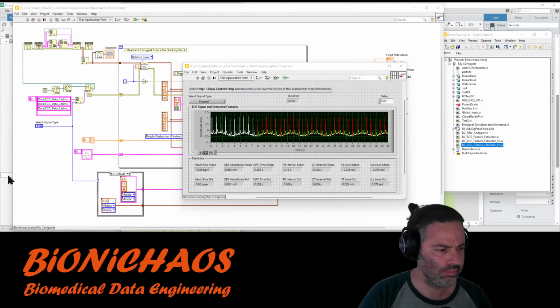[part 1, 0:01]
Dealing with ECG mostly at the moment. It's a bit unusual because I'm normally doing mostly EEG stuff.
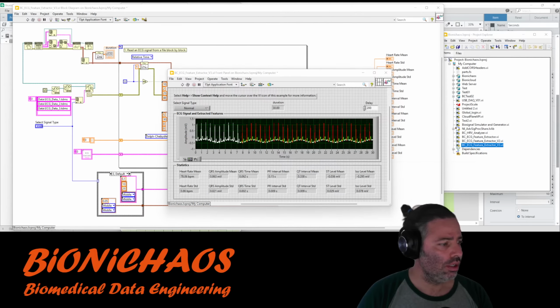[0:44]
Sorry, just distracted by social media stuff. Did it today, so this is what the next tool will look like. I think this will be a short one, just an update of what's coming next on Biomedical.
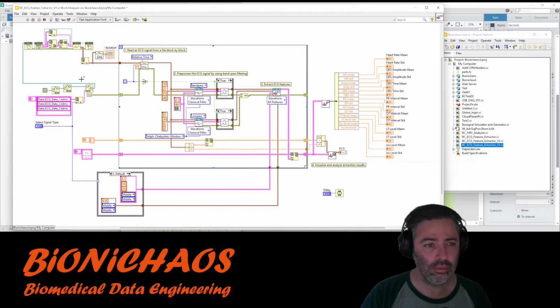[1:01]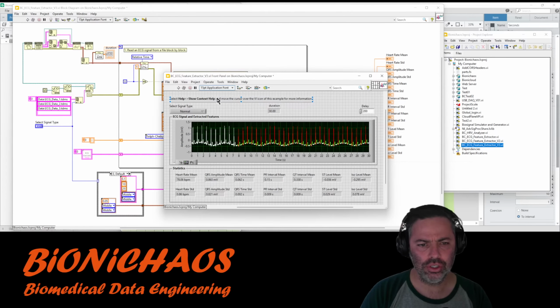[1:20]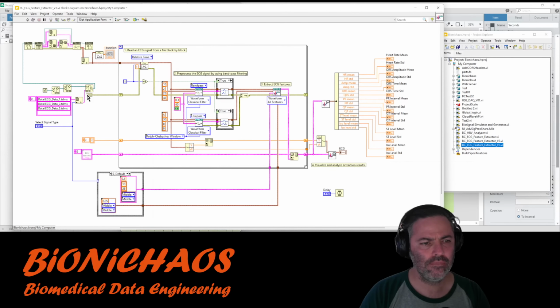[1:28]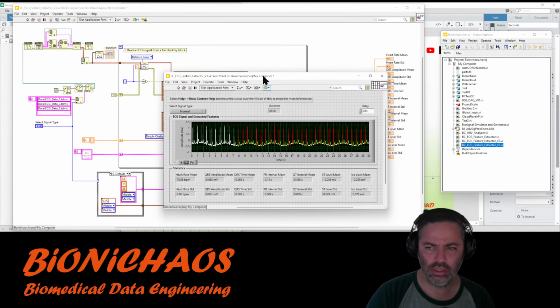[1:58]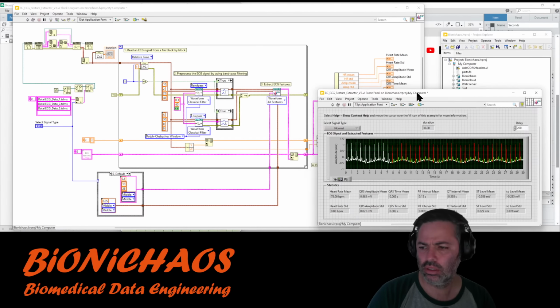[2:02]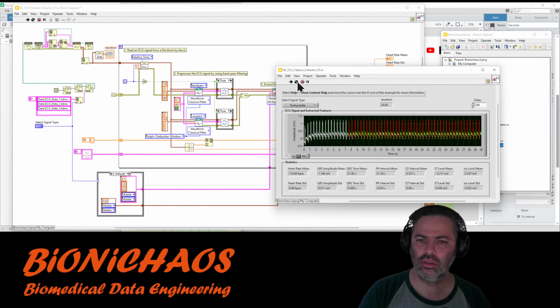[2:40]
To change that, I still need to figure out a few things. I removed the while loop from it because we don't need it. Why is it appearing there? Some sort of buggy thing.
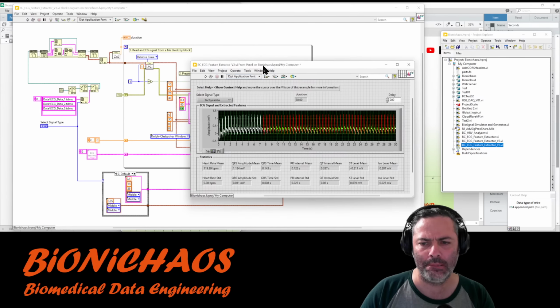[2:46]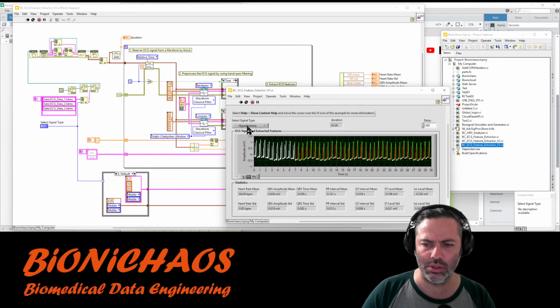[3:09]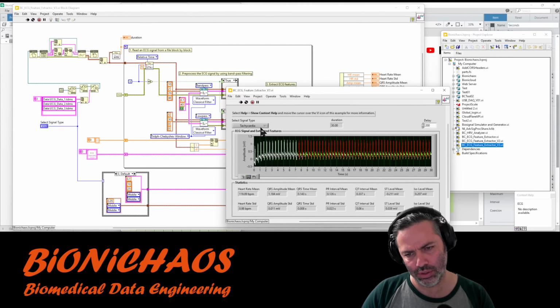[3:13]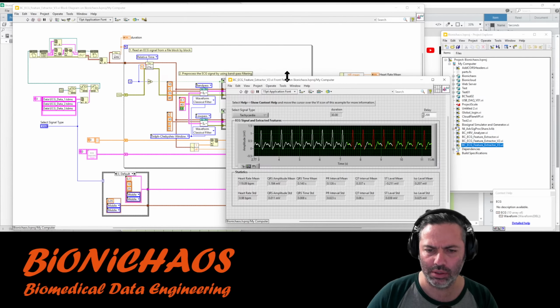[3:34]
Still on this tool, that's what's coming up on the site. It's taking ECG, different types of ECG, and labeling the different components. And yes, it is generating 3 waveforms for each one of those colors. I wonder how to be able to test it properly.
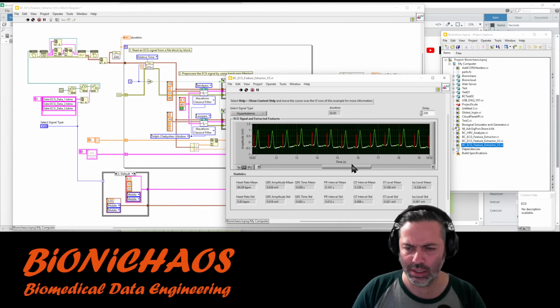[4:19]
This is the backend. Eventually, I have to turn it into an API. So I wonder if it's making any mistakes. Check the normal one. Not sure why it's marking the T and P wave in the same color. Could have marked them in different colors. They seem to be pretty accurate.
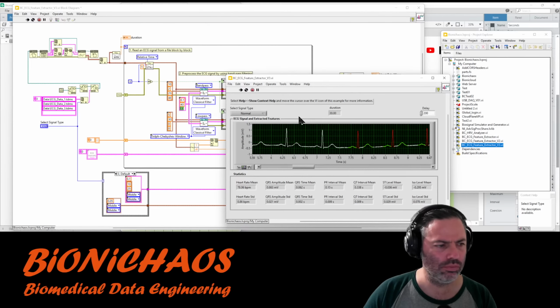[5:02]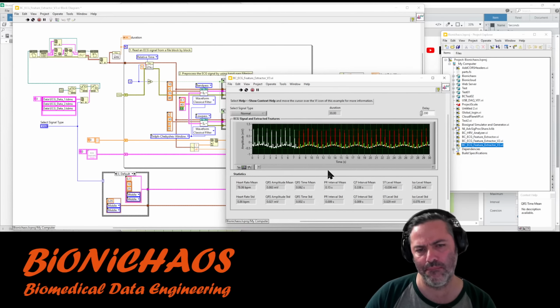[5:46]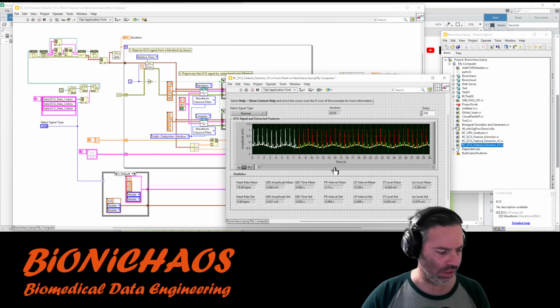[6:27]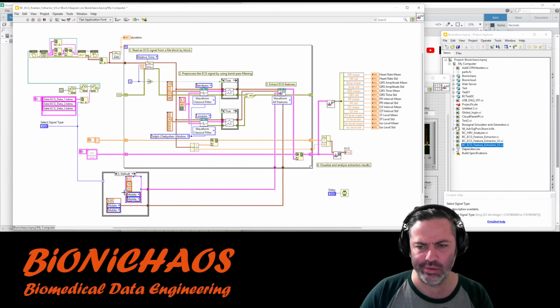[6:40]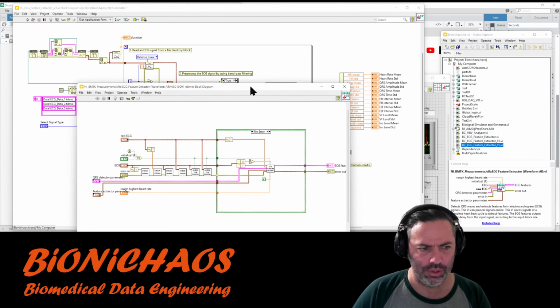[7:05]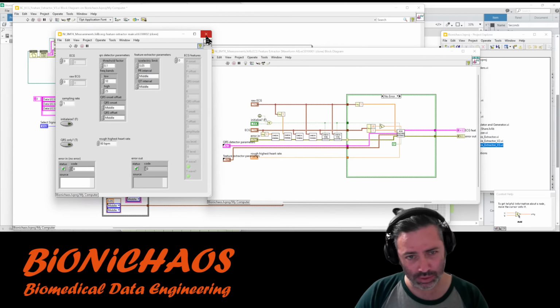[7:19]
Turn it into an API straight away. Just a few weird things about it. Forgot what it was. And the main thing, yeah, eventually it would be good to do it in Python or something, because again, the main function in here is password protected, so I have to get rid of it. I was able to get rid of another function, but this one will be harder to get rid of because it's the main.
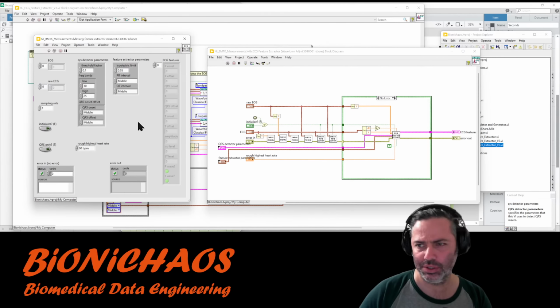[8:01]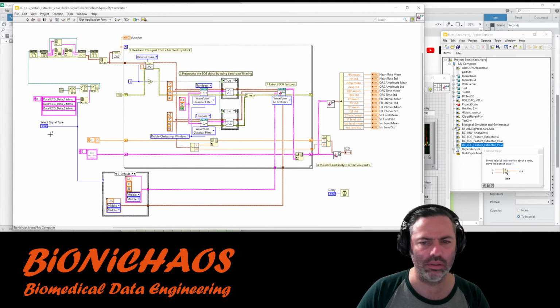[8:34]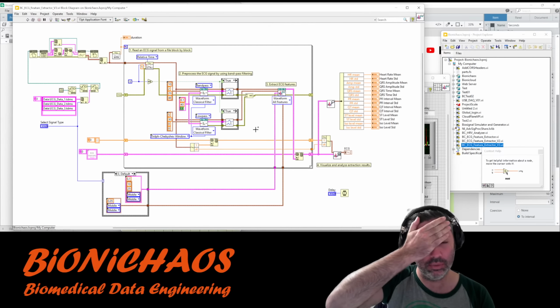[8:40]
I don't know what it is doing exactly. I just have the front panel. The source code is behind the password. There's no documentation on it as well. I don't want to edit this for now. Just leave it as is. It's just an example. Eventually, ideally, we'll have something similar in another language, ideally in Python or R.
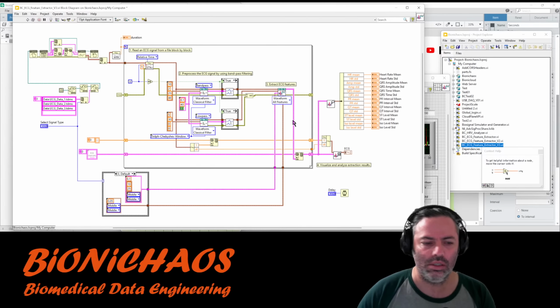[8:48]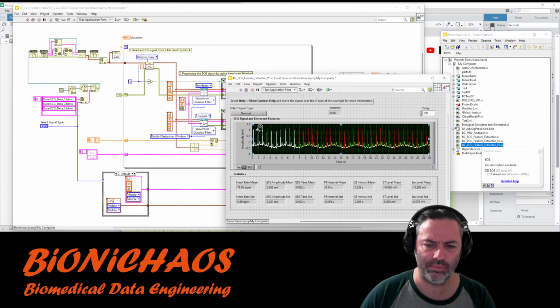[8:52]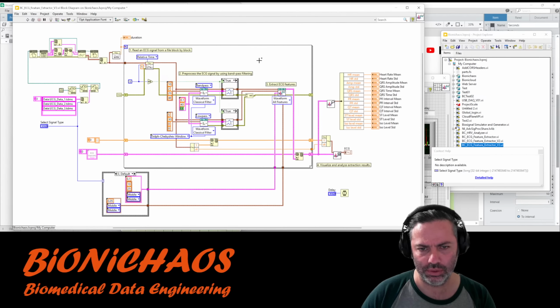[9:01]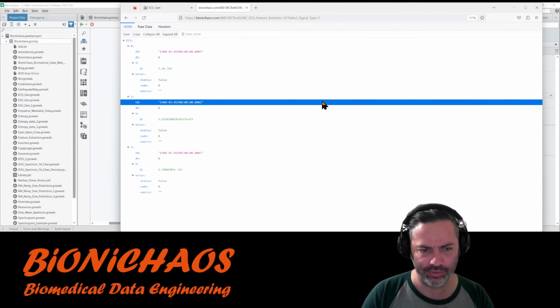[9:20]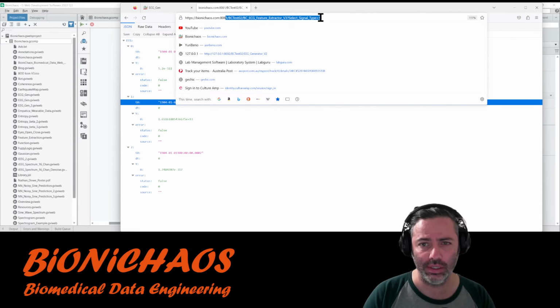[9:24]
So just turn this one into an API quickly. Then we have one input and a bunch of outputs. Cluster. Can you pass a cluster in an API? This is the bit I was fighting with for quite some time. But yeah, now it's working. So you can access the API from here.
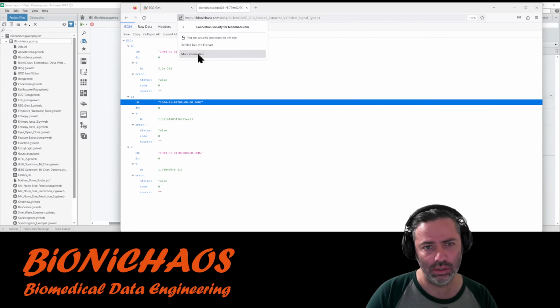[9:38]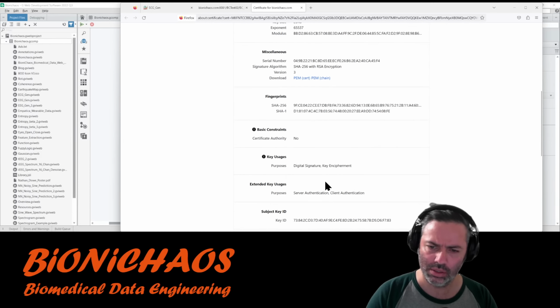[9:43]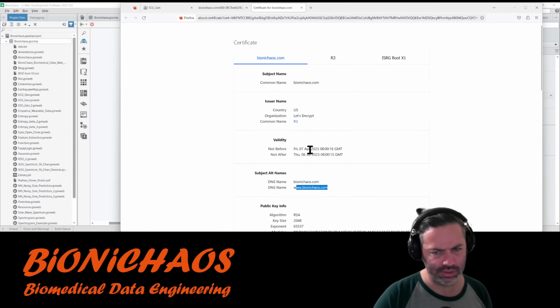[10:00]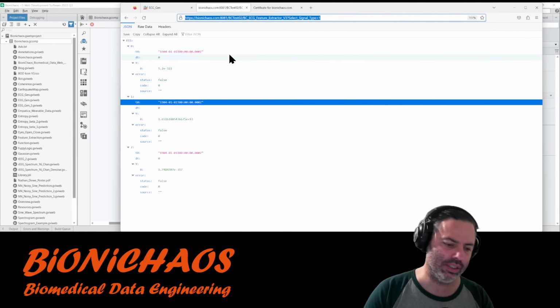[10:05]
If you do it from the same domain name, then the certificate works. You can view the public certificate, and it's verifying that this domain is this domain. And it's encrypting. It's also what allows encrypting any communication between your browser and the server.
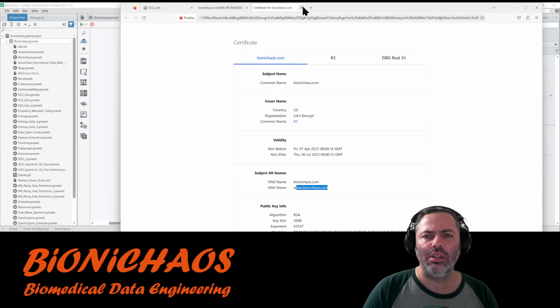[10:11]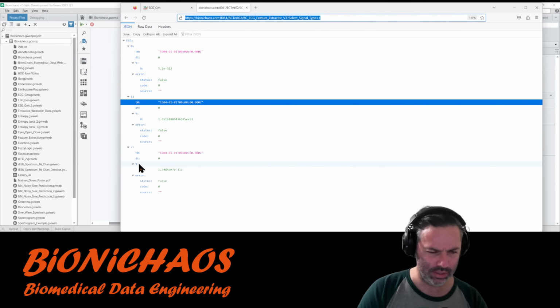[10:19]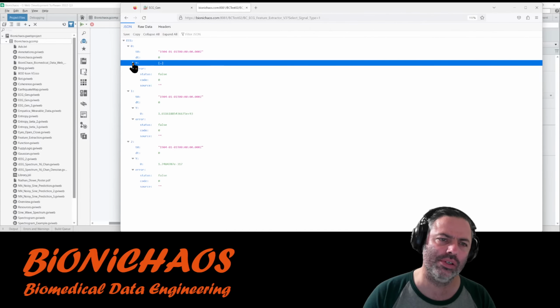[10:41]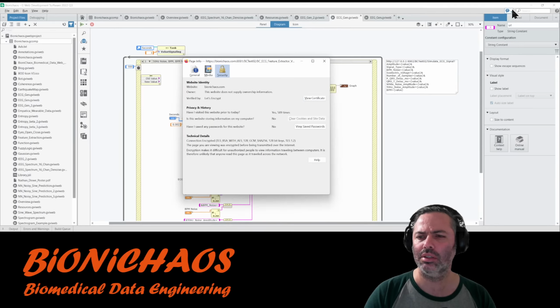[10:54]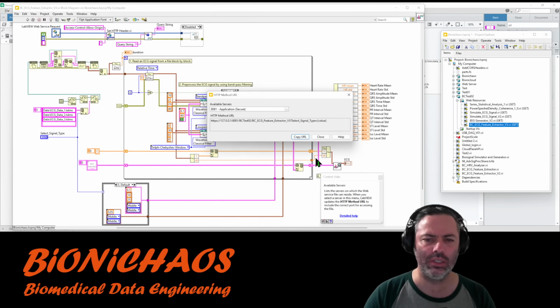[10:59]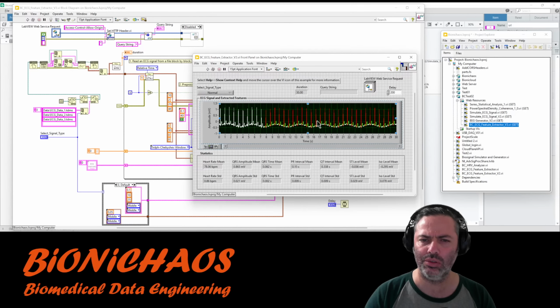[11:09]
So this one works, but probably don't need all this. It has these three waveforms, one for each color: the white, red, and green. We don't need... Wait. Still only have one value in it, so look right. Working, yes.
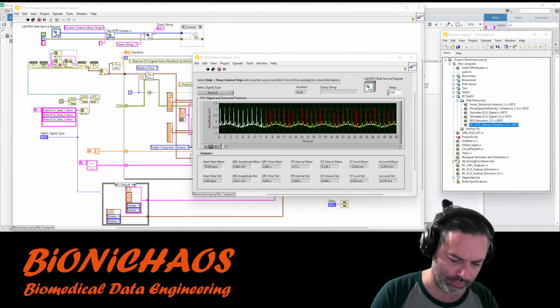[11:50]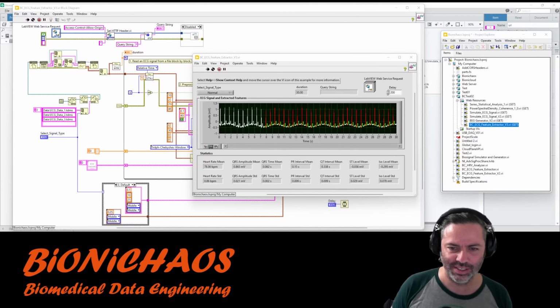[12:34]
So apparently, is it just Labview or National Instruments entirely that was bought by someone? Emerson. I heard of Emerson, but yeah, there's a big press release and everything. I don't know if it was a surprise, hopefully for the employees it was not. Press release. That's not a lot. It's 165 million. For all these numbers, it says 8.2 billion.
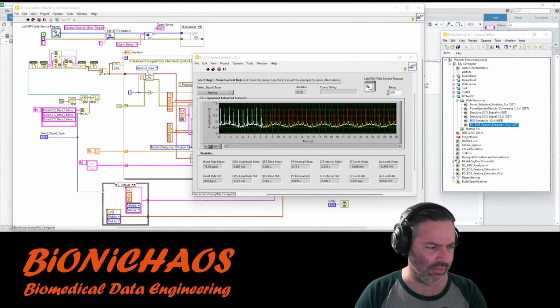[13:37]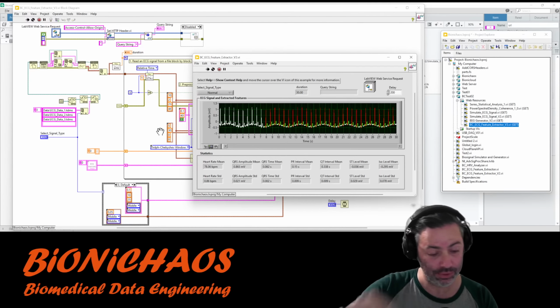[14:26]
But yeah. No, they're acquiring NI, National Instruments. So they're doing a conference call today, 8 a.m. I don't think Labview was doing great after the whole NXG saga, which was a bit of a... I don't want to go into it.
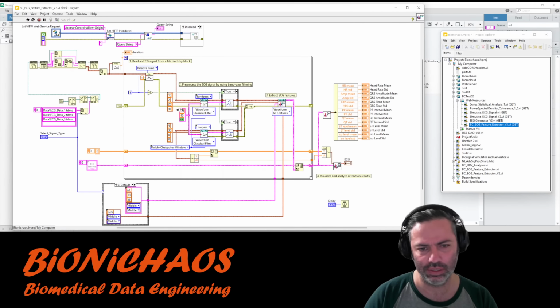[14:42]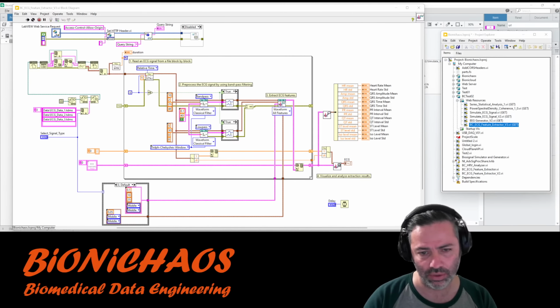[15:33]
So this is old Labview, old style. I'm pretty sure this kind of stuff, except these weird functions, is from 2014, some of the biomedical data stuff that they did, because they haven't updated that biomedical toolkit since. Anyway, I just don't want to show anything on this screen that might be copyright, because you never know. If you're showing an NI logo or something, then they or Amazon will come after you. But yeah, the release date of the Biomedical Toolkit was February 2012.
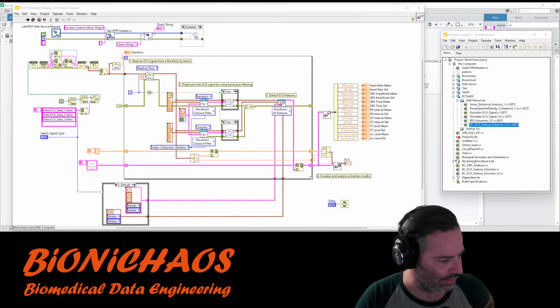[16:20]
There is a 32-bit version as well, of course. And it's available in the JKI package management. Do you need to go there for updates? They also messed up that bit as well. There are like 10 different places where you could find the updates and add-ons and things. Should have JKI installed. It's also weird. The VIPM is checking for an error: final result on server, please check if the URL is correct. It's some error message. I haven't used it in a while anyway. Should uninstall it.
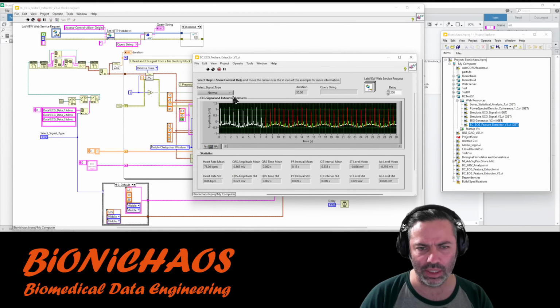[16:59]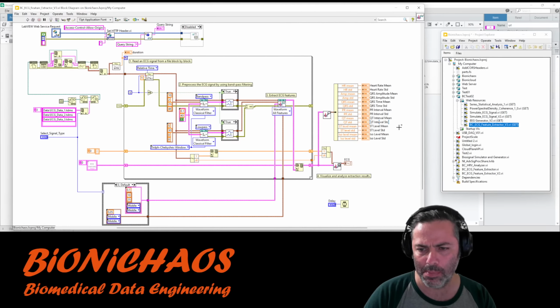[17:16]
Anyhow, ideally I would like to migrate this into R or Python. Any suggestions are more than welcome. I've only really used Labview and Matlab before, but Labview is Labview, and Matlab is also quite expensive and a bit limited, I think. I haven't checked what more recent updates or improvements they have made.
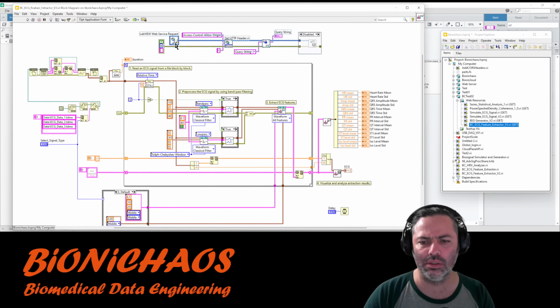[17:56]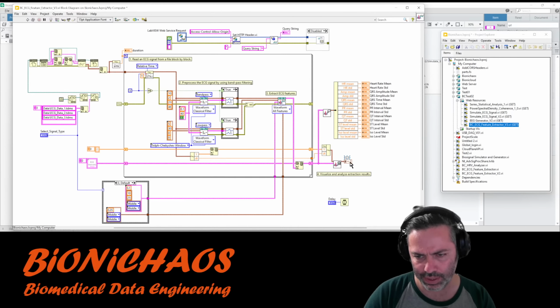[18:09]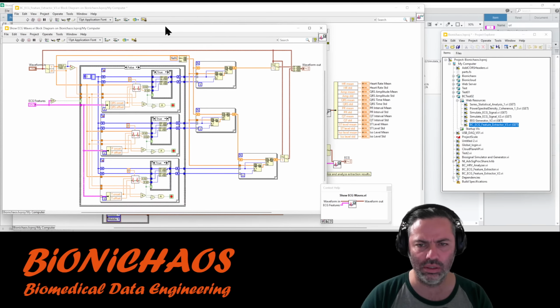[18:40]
So where were we? So this is what sending the data to the API looks like. But yeah, probably have to break out... I don't know, there's this... It doesn't have to be that complicated. What's this one doing?
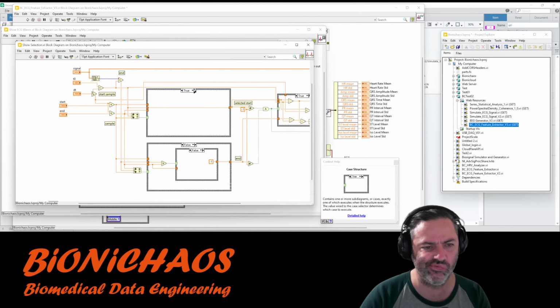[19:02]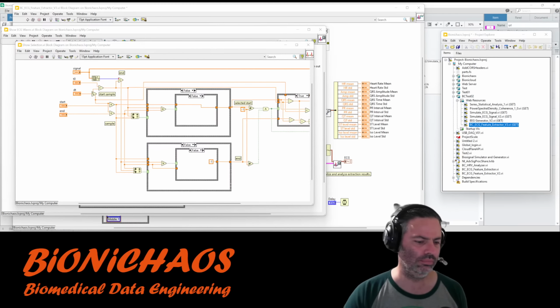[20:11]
Sorry, this song is too loud, isn't it? By the way, let me know if you can hear me at all, or if the background music is too annoying. Okay.
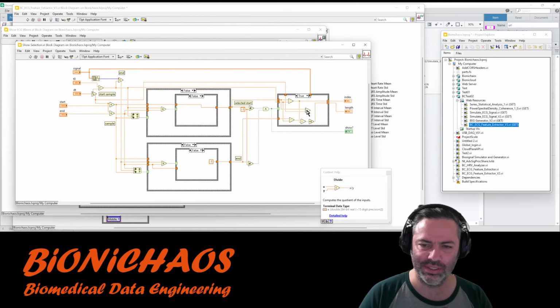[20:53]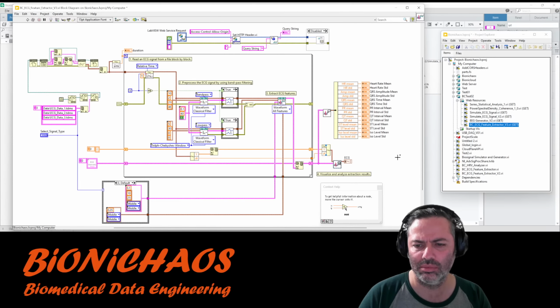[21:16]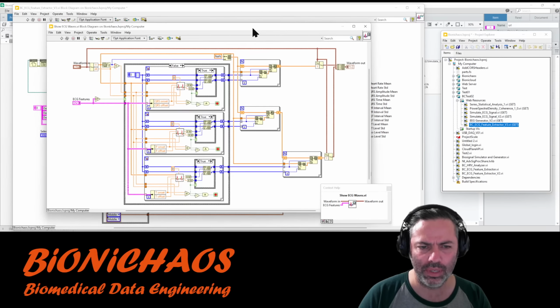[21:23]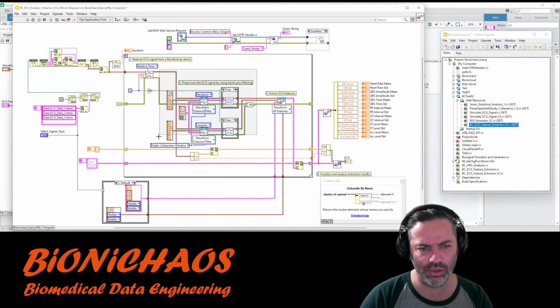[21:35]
Why is the output of this not going anywhere? And this is not being used as well. What on earth? I have to break down all this code anyway, so might as well do it now. There is an option in Labview to select the code and turn it into a VI, a function. But is there a way to do it the other way around? Don't think so, is there?
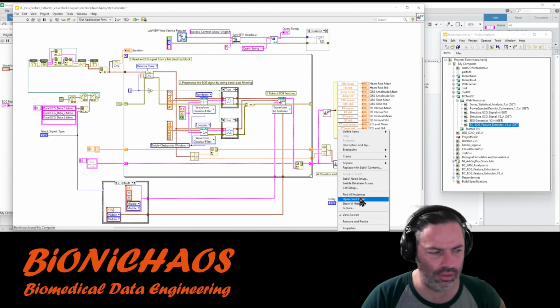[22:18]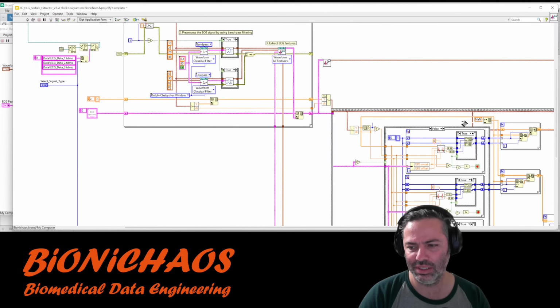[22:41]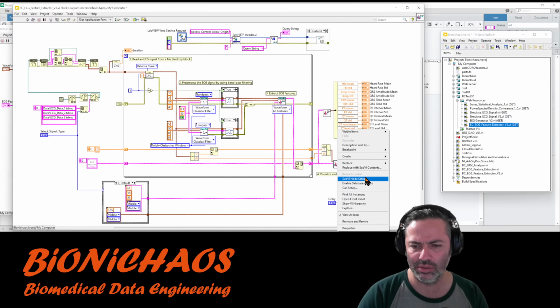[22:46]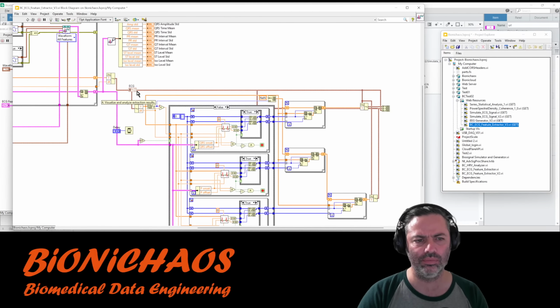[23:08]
So I can just select this and go create. Where was it? Yeah, create sub VI. Then out of a sub-VI, I can make space. Sequence structure. Why? I didn't want a sequence structure. No. Alright, so that worked. I don't think I ever did this before. Handy.
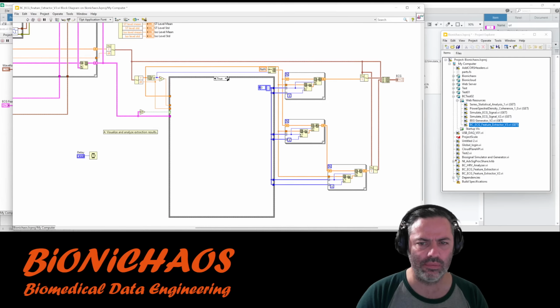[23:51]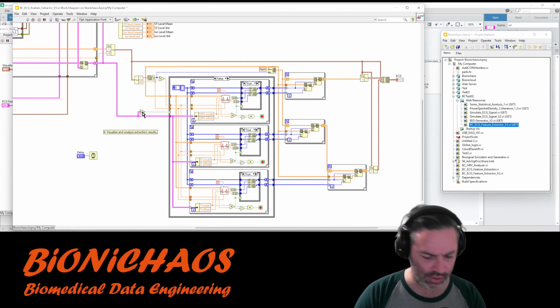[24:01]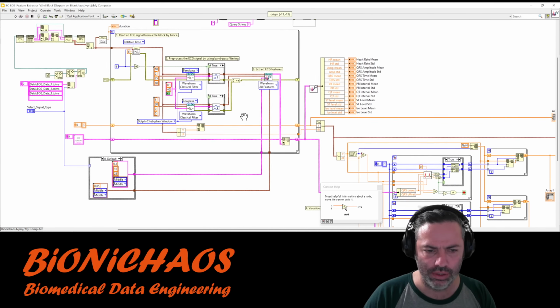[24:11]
Just checking if the array is empty, is it? Yeah, but do I really need this? Don't think so. I have to finish this tomorrow, probably next week.
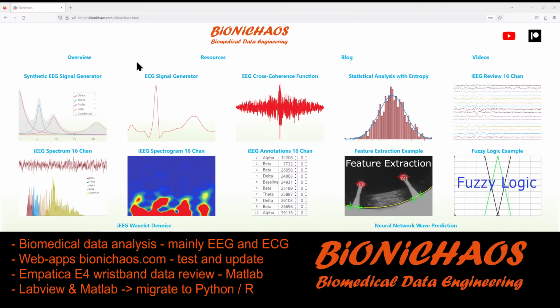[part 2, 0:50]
So I'm just checking how the stream sounds. Oops, that will go into the stream. Will keep repeating itself in a loop. But at least I do have this sound. What are we doing today?
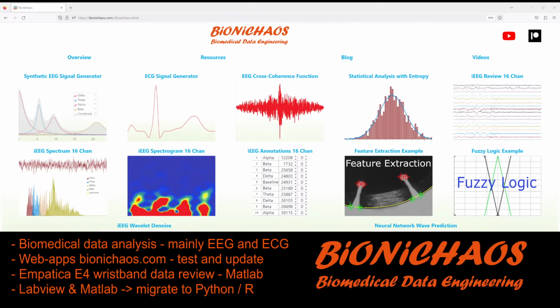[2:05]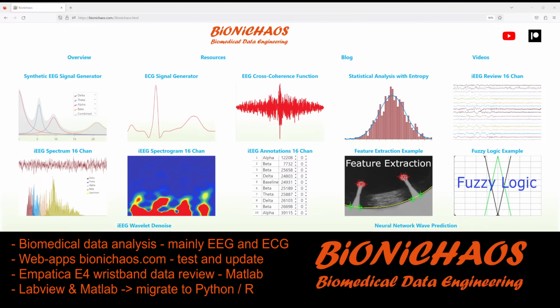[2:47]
First of all, just about it on a LinkedIn. Post in a group and then delete it once the stream has ended. Well, LinkedIn is offering me to put this post on another group as well, which I'm happy to do. You have to follow the bot. You have to take the bot's advice.
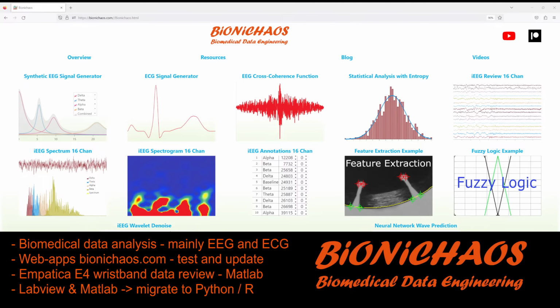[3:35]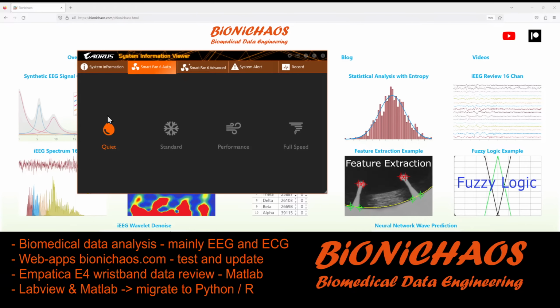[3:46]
Not sure how bad my fans are getting into the microphone, which is set to quiet on the motherboard, but it's still quite noisy. I mean, yes, this one is rolling at 100%, the CPU one. Not entirely sure why it is doing that. Certain things that I can close.
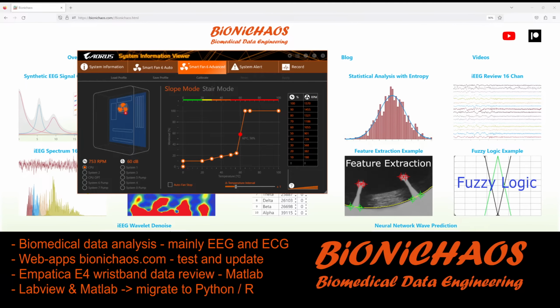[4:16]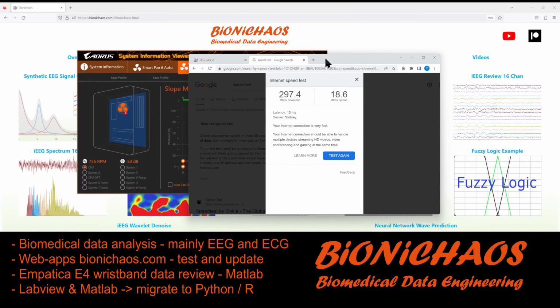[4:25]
So now we got the server, the BioniChaos, Bionicloud, whatever the server is called, connected to fiber optic. Well, it's essentially unlimited. Meant to be like a 1 gigabit connection, but I'm still using Wi-Fi, so it's not wired to the router, so I'm getting about 300. Problem is that my upload seems to be capped. And what a better way to test it than a live stream.
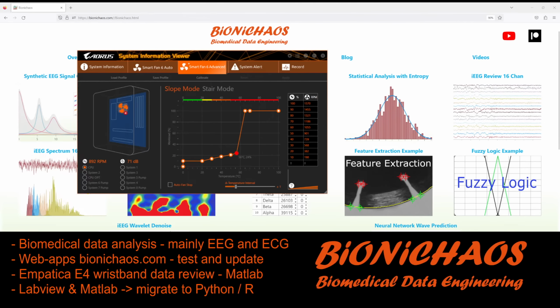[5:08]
So currently I'm not dropping any frames, but yeah, I'm sure if I keep increasing the rate, it will reach the ceiling. And with the noise which
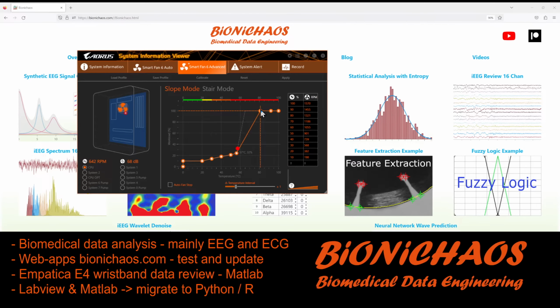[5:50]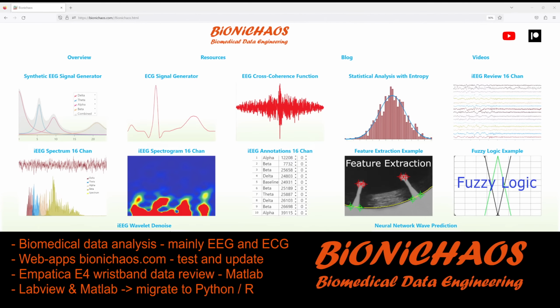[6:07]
So it's these two CPU fans that are going a bit, move it this way, be quieter, and the other one as well, move it that way. This should be better. So now the fans are not throttling, but we will just keep monitoring that, see how that goes.
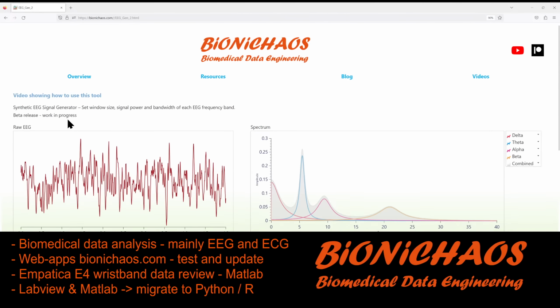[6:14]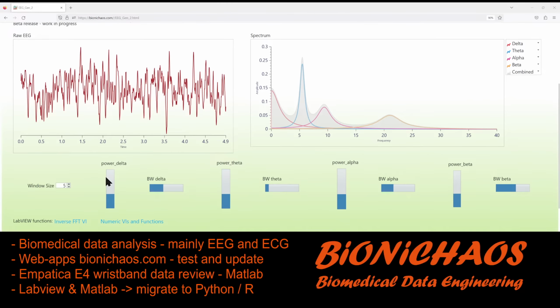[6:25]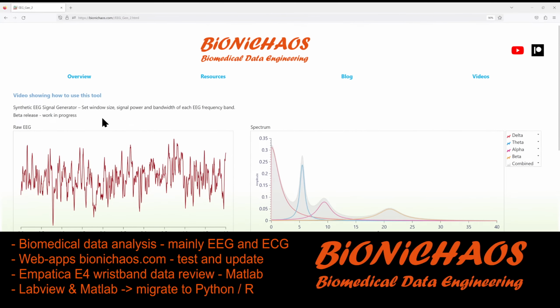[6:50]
Because yeah, when I'm using the tools on my own machine, it will be using the GPU. So it should not be putting any load on the CPU. But if you access them remotely, at the moment the GPU would not be used. So you will be relying on my CPU, which I don't think is ideal. I'm looking into changing that.
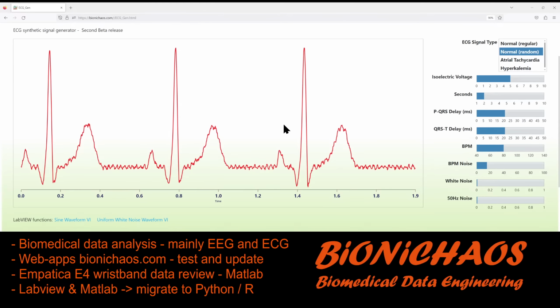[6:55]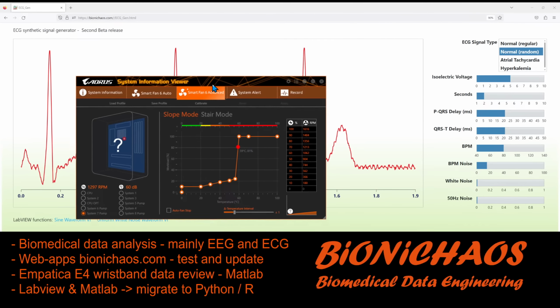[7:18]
So normally on this channel, we test the tools. There was a minor update to this one. It should look slightly better on a smaller screen, especially on like a mobile screen. Can still hear the fan. Oh, I don't. Ooh, which one's that? Don't get it. One of those that has like a question mark. Is it actually there? It sounds like something was connected to it. This one is also going.
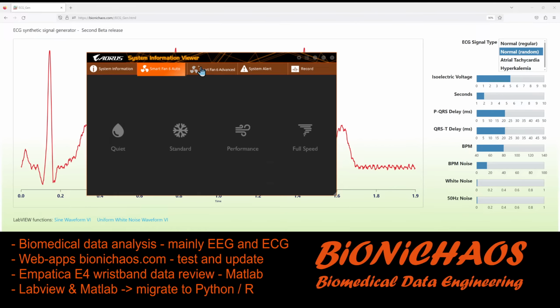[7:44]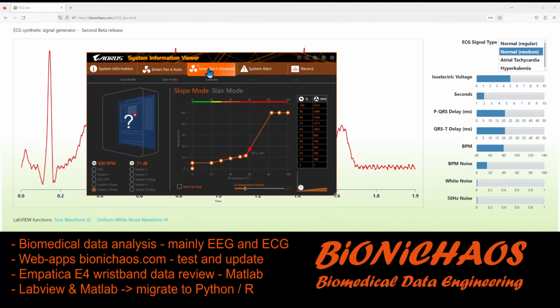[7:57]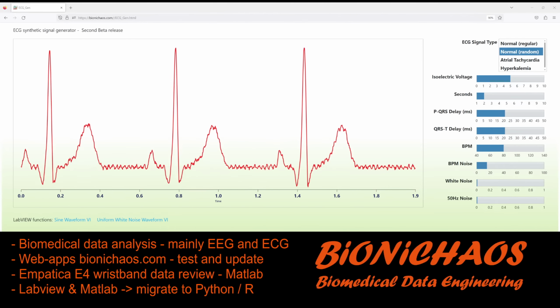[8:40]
Well, yeah, we don't want it to overheat, so we could have a mode for a live stream, because yes, when you select this to be quiet, it's not actually quiet. This one's going, but I can't hear it. Don't think there's an actual fan connected there, but I'll do this anyway. Move it to the right slightly. Should keep it quieter. I don't think those fans are actually connected. I'm not entirely sure. Let's try this.
Yeah, with this tool there was a bit of a bug that could be considered a feature, where when you use any of those sliders, it's actually the same anywhere where you have a slider like this on bionichaos.com, where it keeps sending GET requests, which is a bit unusual. So I'm not sure if it's a bug or this is how it's meant to work.
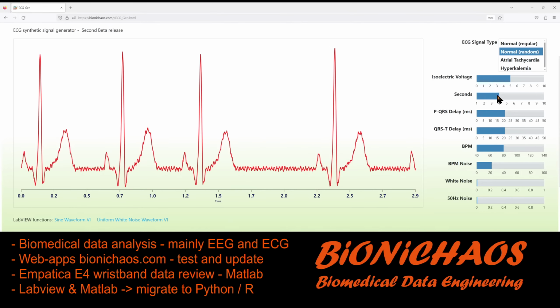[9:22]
Anyhow, this can generate another way of an abnormal ECG. If you increase this noise, it's actually skipping beats. I already discussed it before, but it has to be made clearer. I don't know how.
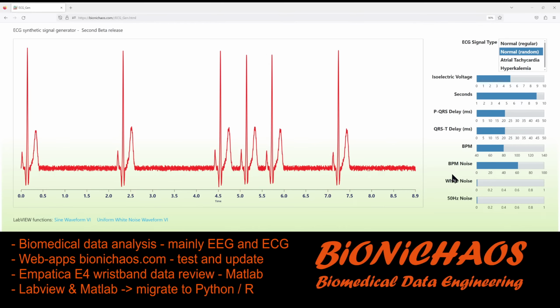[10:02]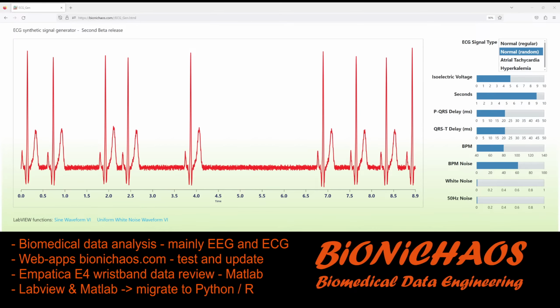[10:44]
Here's something else clicking in my PC. I think it's one of the GPU fans. It's a bit clicky. Restore my brightness settings. Just check the chat. Sometimes OBS YouTube API is not really working. No, it is working, but that's okay.
So if you click on one of the sliders once, it just makes one API call. But if you actually slide it left and right, it makes like 100 of them. Yeah, we'll call it a feature, but it wasn't intended.
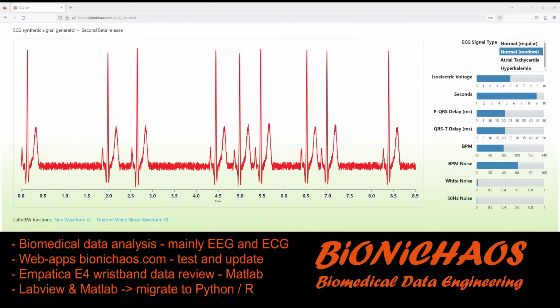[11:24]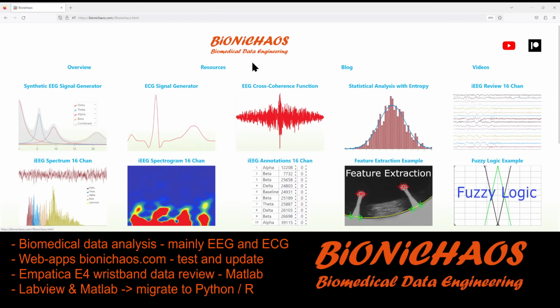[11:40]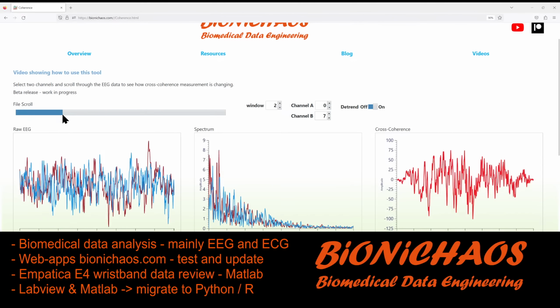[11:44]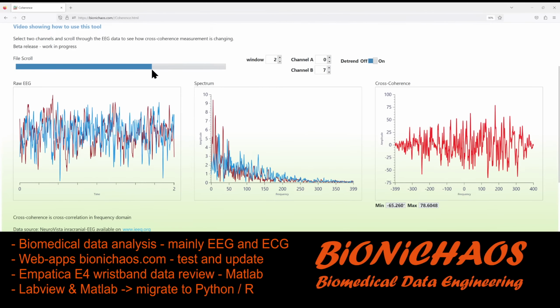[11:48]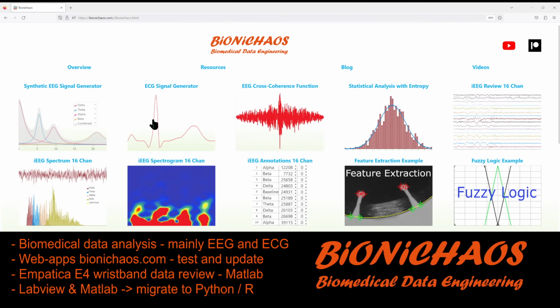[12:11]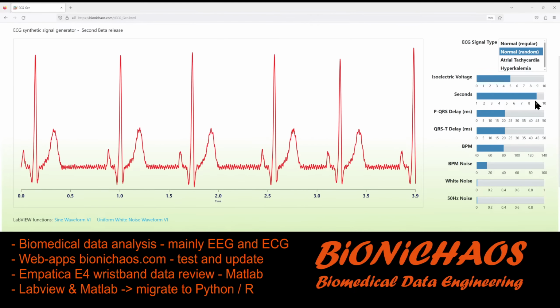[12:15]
So this tool generally is working okay. Do we have cross coherence? And this one is working fine as well. But again, that's my biased perception of it. Yeah, actually, this one, the slider is more responsive. So when you scroll, it then stops scrolling. Whereas in here, if you keep scrolling, it will keep making API calls. I'm not sure why. Just one sec.
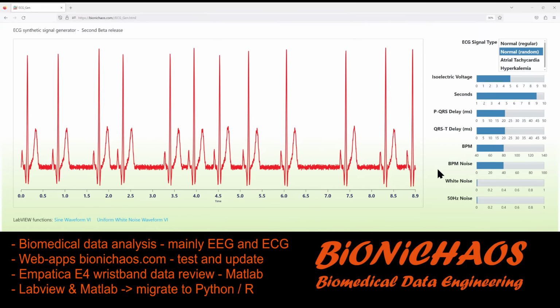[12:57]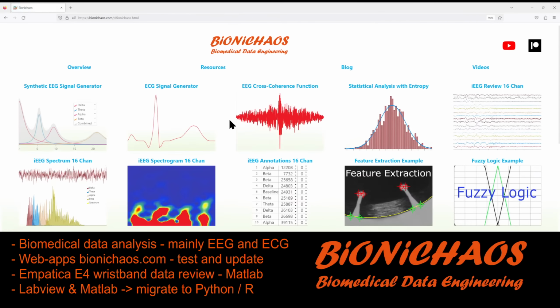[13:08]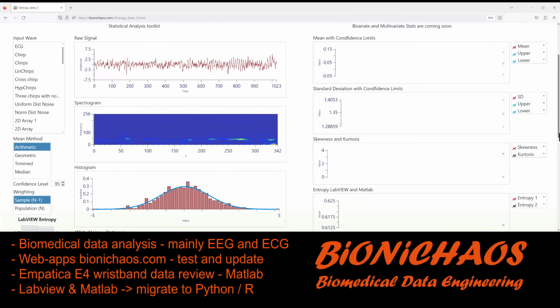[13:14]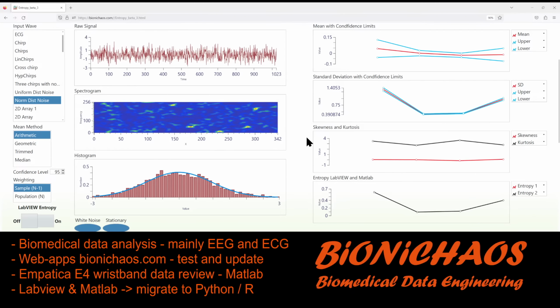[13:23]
Yeah, BPM noise of 40 is already quite high. The gaps in the spikes are very prominent. We had that statistical analysis. I think we were planning to do some more changes to this, but at the moment, probably better to start a new one instead of touching this one.
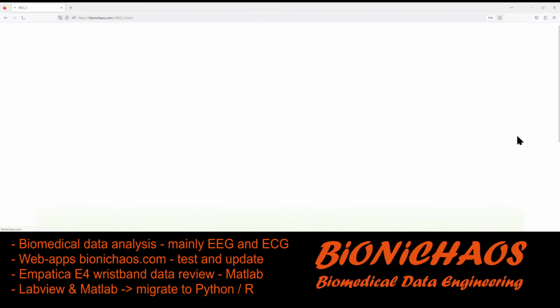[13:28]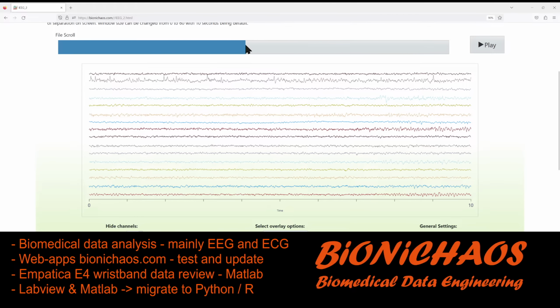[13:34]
We have the old review tool. There's something wrong, something that I'm doing, making some sort of mistake somewhere in the code. I'm not sure if it's the API itself or calling it. It must be calling the API. We had this bug of, yeah, again, the slider. So either I'm getting rid of all the sliders or have to fix it at some stage.
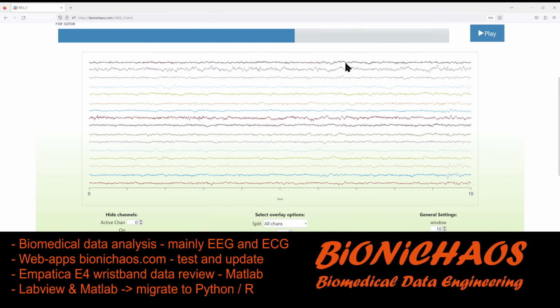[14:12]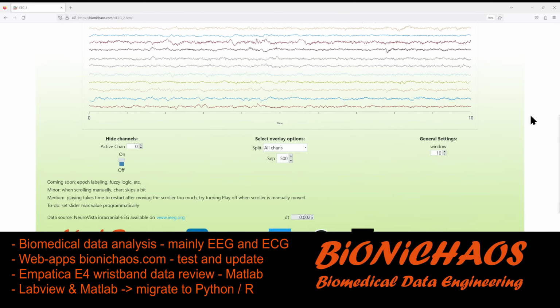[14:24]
If anyone used those before and had something similar, any funny business with sliders, please do let me know. Again, this is one of the older tools, so we'll leave them as is.
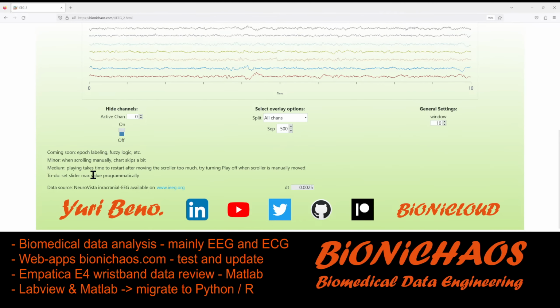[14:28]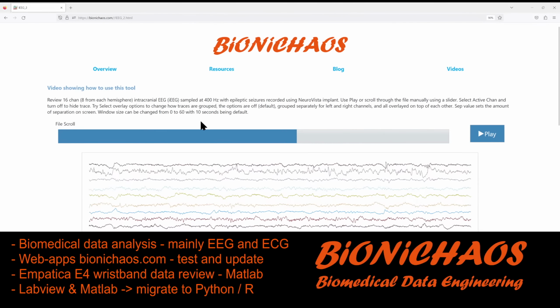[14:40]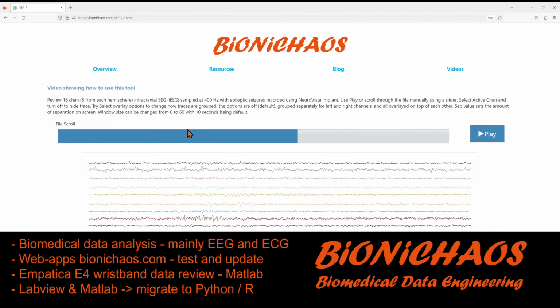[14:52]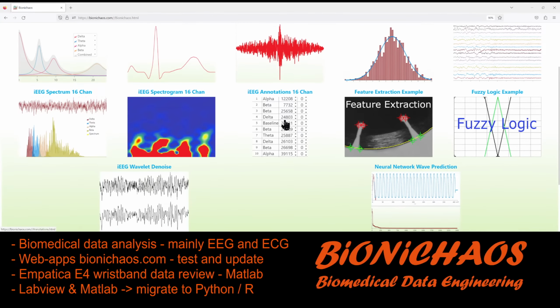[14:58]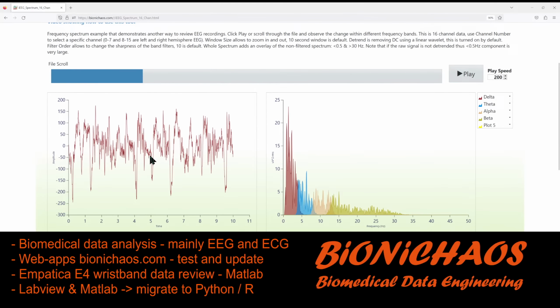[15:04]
Eventually, we also need to add some more description to these things, but I can do it offline. And eventually, all the videos like this one, I'm editing them, making them shorter, and eventually will be transcribed, hopefully by YouTube. And that could be used as a blog as well. So that's the plan. Or an additional feature on the website.
Yeah, I can really hear that fan clicking. It's like a very expensive GPU. I guess something happened in shipment. Did I have it for under a year? Will it still be under warranty?
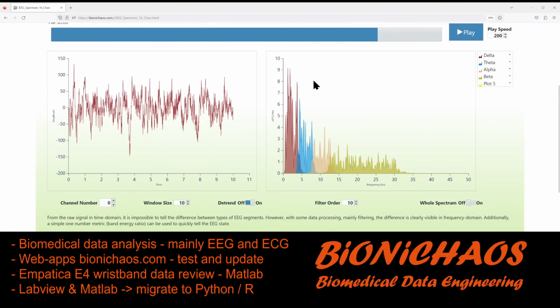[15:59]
This tool is working okay as well. Yeah, so the play button will be delayed depending on how long you scrolled, because at the moment it keeps sending more and more GET API requests, and now it's done, and the play function is on.
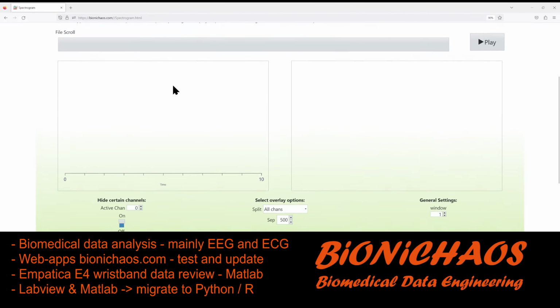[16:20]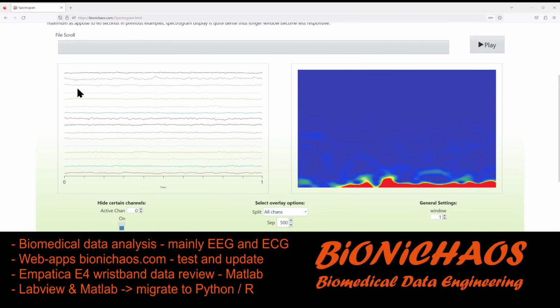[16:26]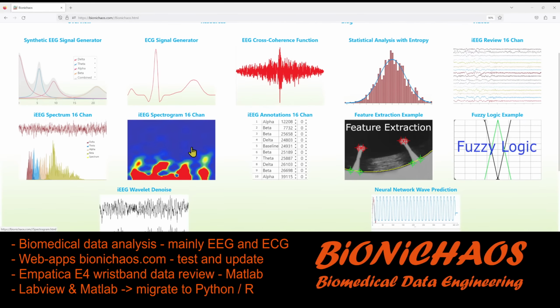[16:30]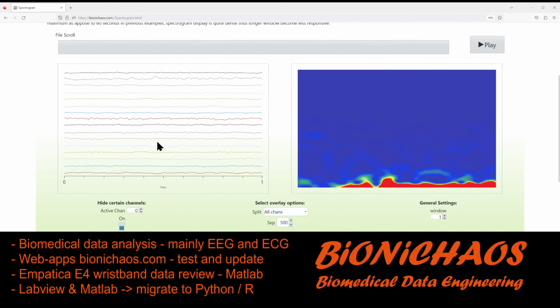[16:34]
In this spectrogram, when you load the page, it's meant to show the waveforms. If you load it again, it just works. Now it works again. So I don't know how to reproduce this thing where you load the page and it's actually not showing you the waveforms. It's pretty annoying. I don't know what's up with that.
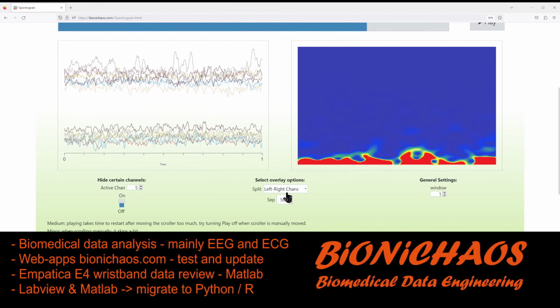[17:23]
Channel. Yeah, this labeling is not great, is it? It should be hide active channel instead of certain channel. It should be clearer. Overlay option. Yeah, the left and right should be there just as the default, and this could be reduced to like 300, 200 or so.
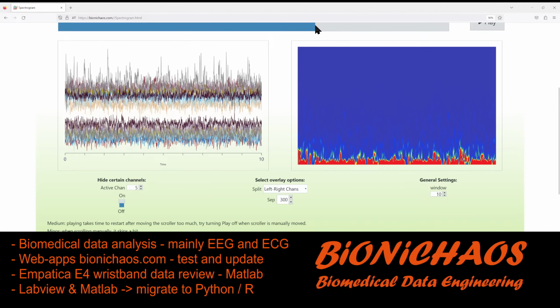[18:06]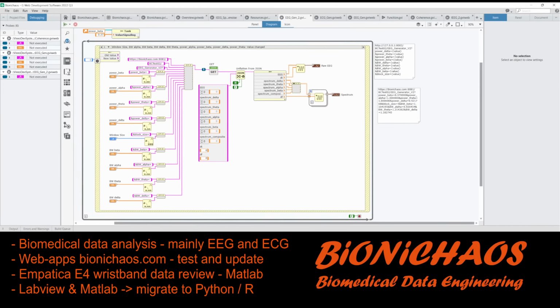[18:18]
Also the window size, is it too small? Ooh, there's another bug. I can fix it straight away. When you change the window size, it should update. It's not updating. I guess it will update if I scroll this. Ah, yeah, it does. It becomes less responsive as well. But when you change this, it should update the window without scrolling. So let's fix that quickly.
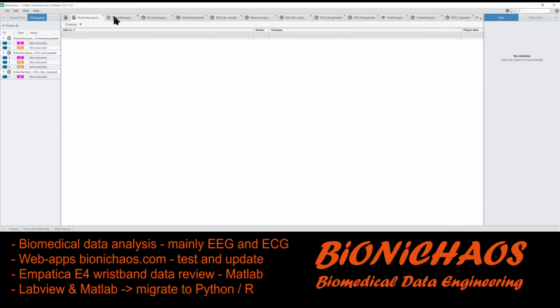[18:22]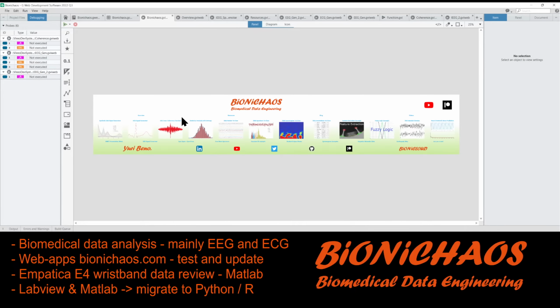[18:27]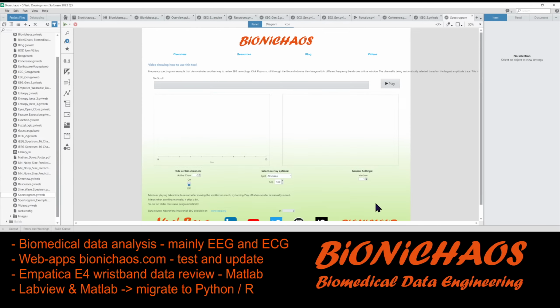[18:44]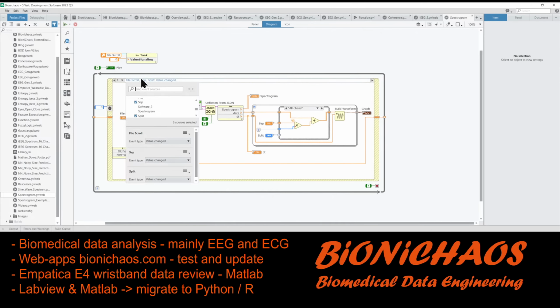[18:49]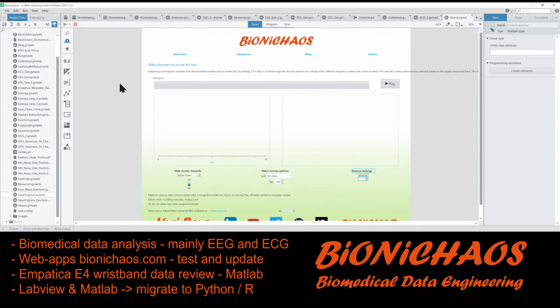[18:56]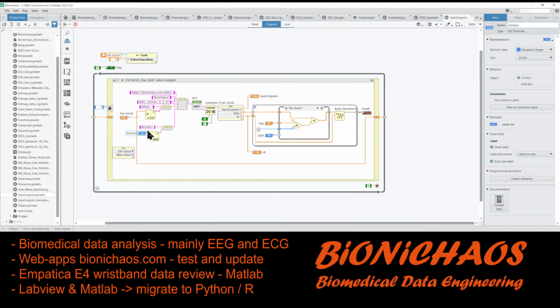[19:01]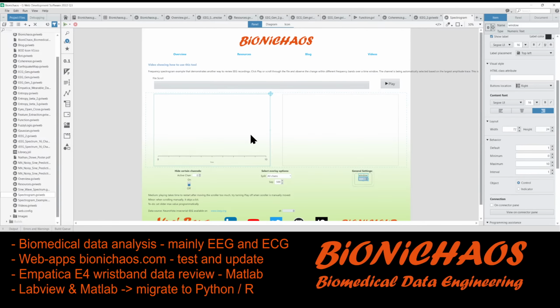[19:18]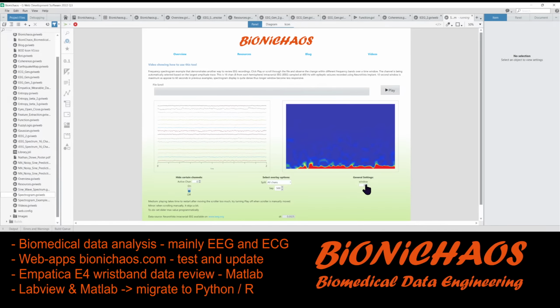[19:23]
We get back to business. Which one is it? This one. Spectrogram HTML. And we need to add this window size. Ooh, this is for window size. Right, file scroll. Need to add cases. A window. It should be it. When you change, yep, this is better. Quick fix.
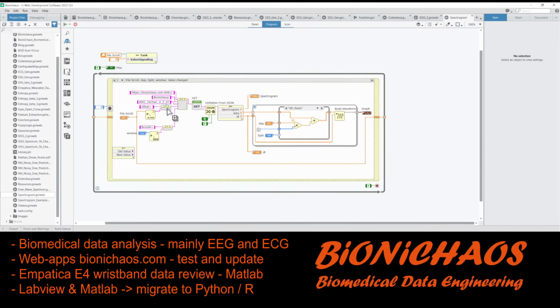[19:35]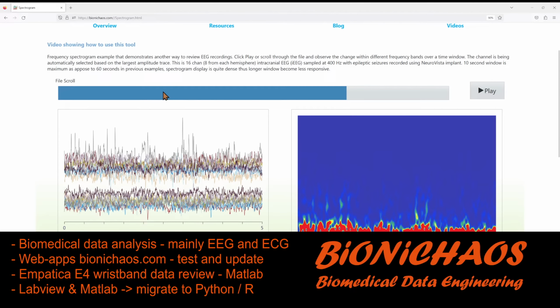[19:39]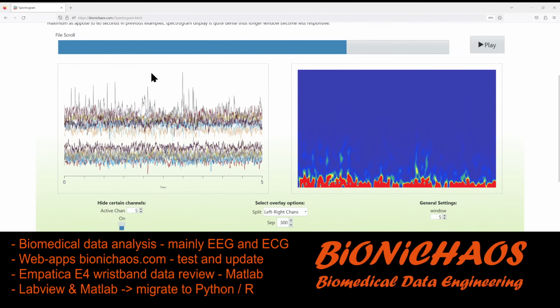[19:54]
This one, let's just check if this description is correct. It's a frequency spectrogram example that demonstrates another way to review EEG. Was it another way? The main way. Another way. Should play a bit then on the left side. So again, we'll leave it as is.
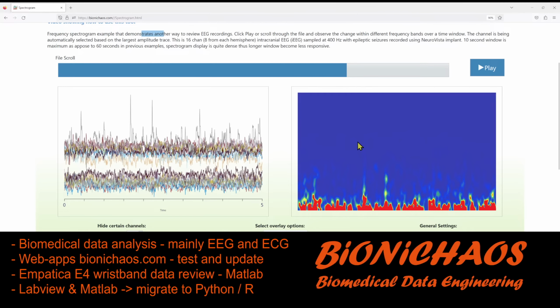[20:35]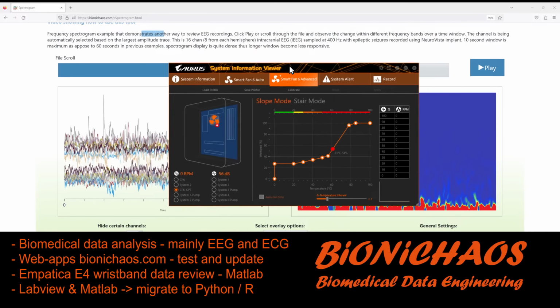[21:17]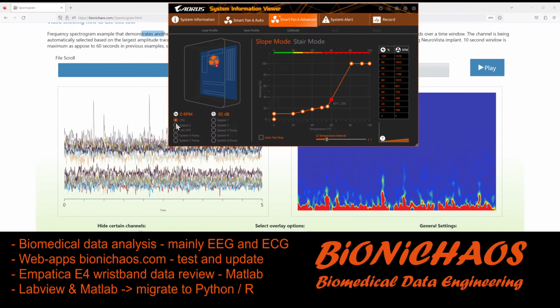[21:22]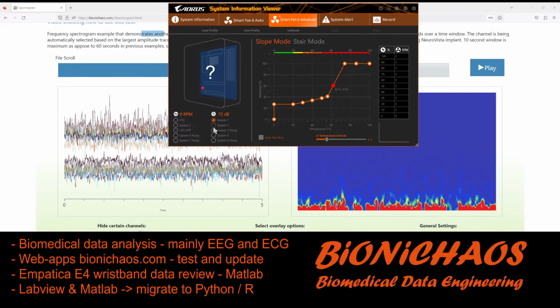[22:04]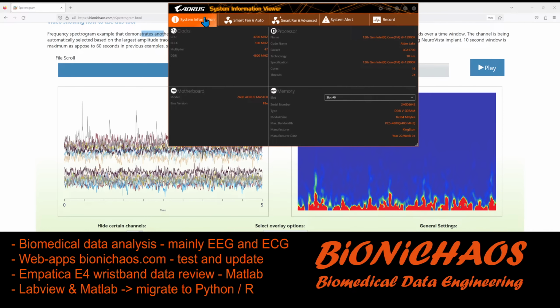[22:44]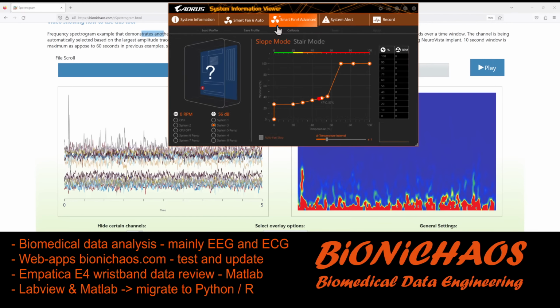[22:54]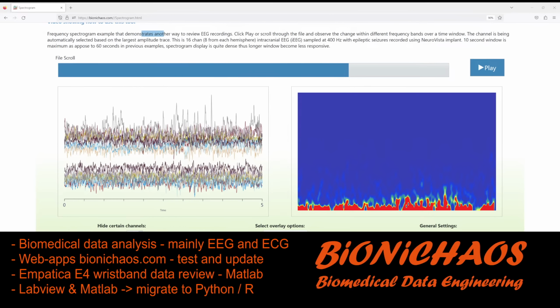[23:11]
Here some fans again, and this will not be the CPU, will it? So probably be the GPU. Let's check the CPU. Oh, this one. Wait, there's actually another fan going. No, it's a regular fan, not a computer fan. But I did turn it off. To start monitoring the GPU as well. Not sure why some of these show up in here, as they're not actually connected to anything. Wait, there are, was it 10? Yeah, I do have about 10 fans in the machine. But I think the three in the front are all connected together. I had to also give them proper names. And still something is going. Must be the GPU. That's less of a problem because I'm happy for it to keep going. It's just the other thing.
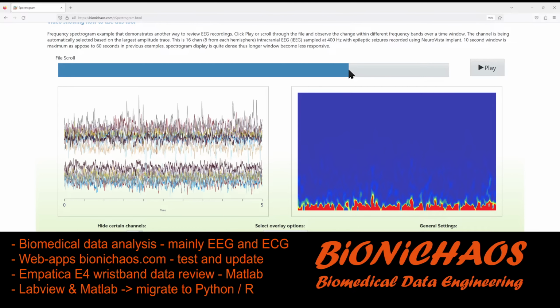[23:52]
If you stop this, click the shortcuts. So we had some earlier tools. So now I'm scrolling with left button. You can use left and right to scroll, but I don't have as much keyboard shortcut control as I do if the tool is fully LabVIEW, so standalone LabVIEW. But maybe I'm wrong. Maybe I can add extra shortcut features to be used in a web browser.
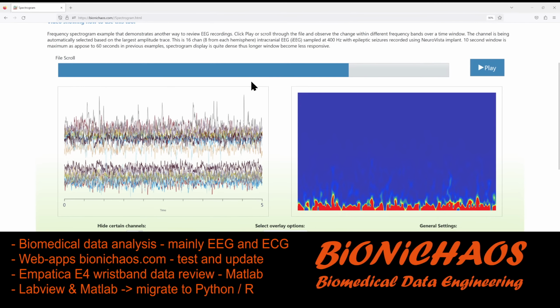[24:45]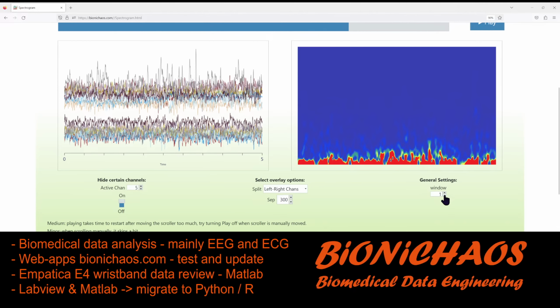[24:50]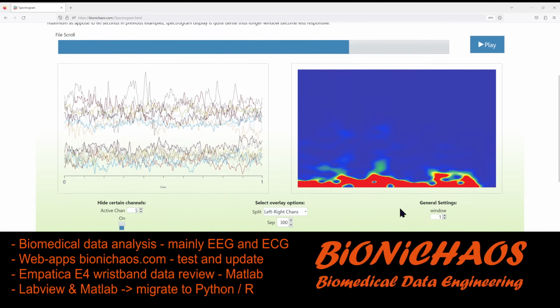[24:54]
Yeah, obviously it becomes much more responsive if the window size is smaller.
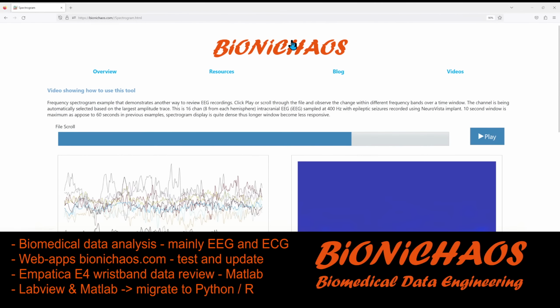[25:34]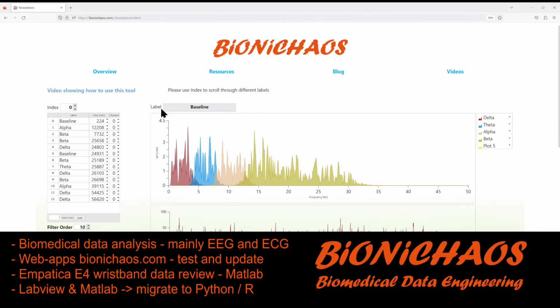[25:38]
Eventually I'll be cleaning up all the live streams. Potentially also turning them into regular videos, but it just takes forever to edit the things, which I just don't have. I just prefer to spend my time in a different way.
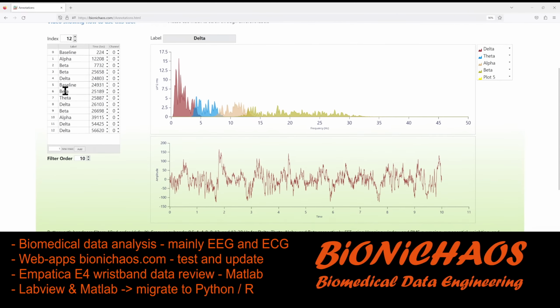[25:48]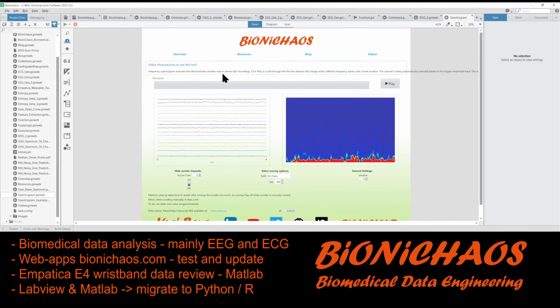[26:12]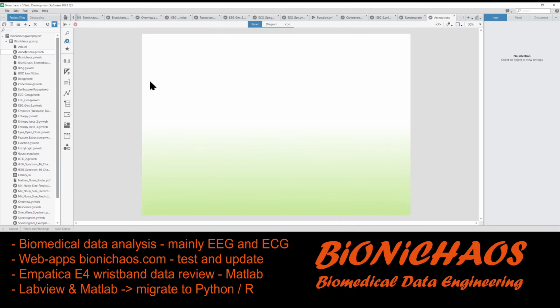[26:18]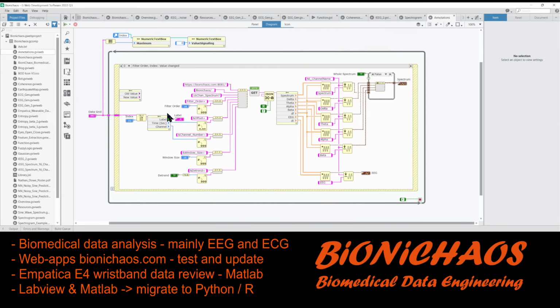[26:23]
This tool again, ideally we would like to click on the table. Let's just check if we have this functionality. So when we click on it here, let's go back into annotations. Annotations. So when you do, it has only one event case.
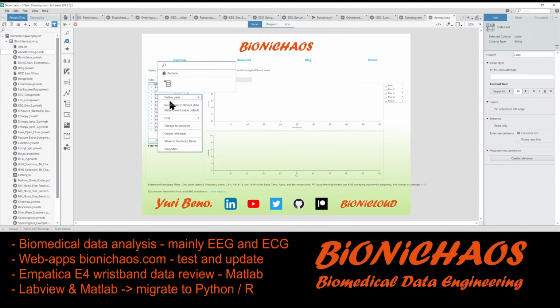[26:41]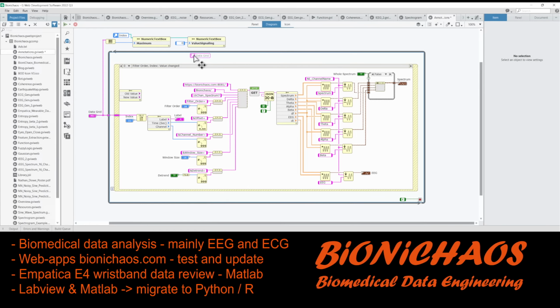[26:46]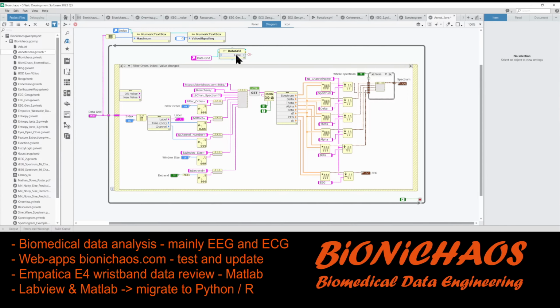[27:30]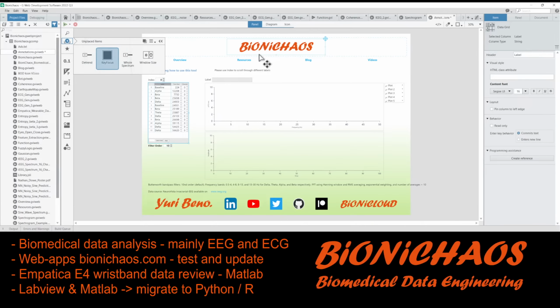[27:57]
Question is, create reference. So create reference to this and do that key focus label. Key focus, what? A visible disabled key focus value? No. The question is, window size, no. Something that's heat, no. Label, key focus. It's just a binary thing.
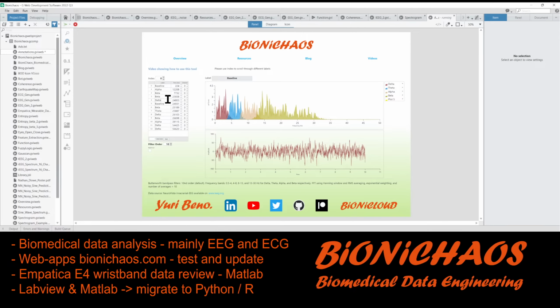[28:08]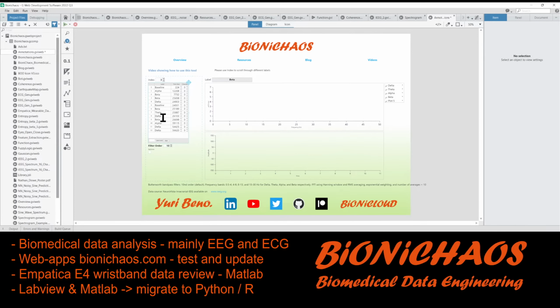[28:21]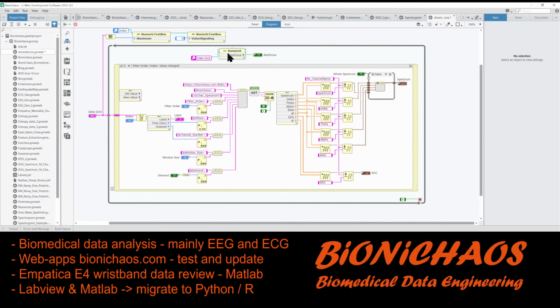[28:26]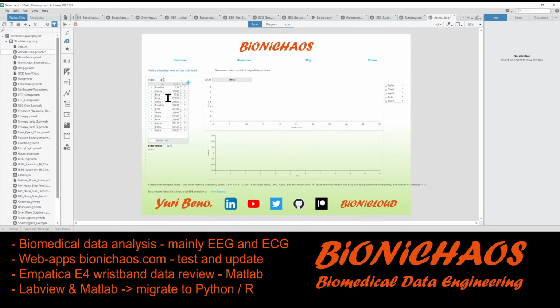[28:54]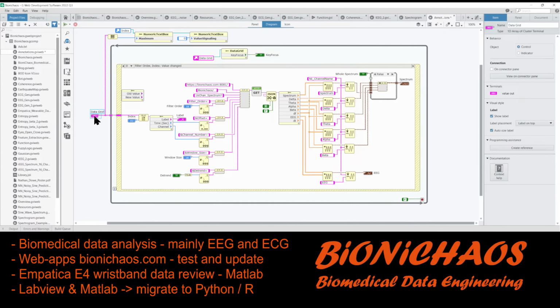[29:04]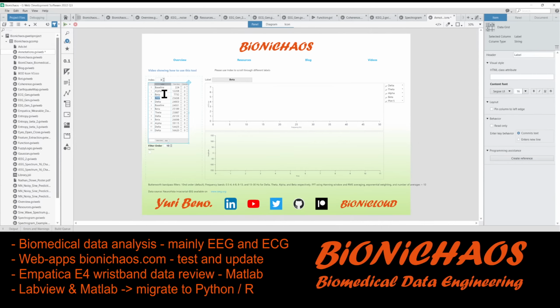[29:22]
In LabVIEW, there are options to detect which row is selected, but I cannot find this feature in here. That's not good. Wait, it's called data grid? It's called data grid. Read. Doesn't have this function, does it?
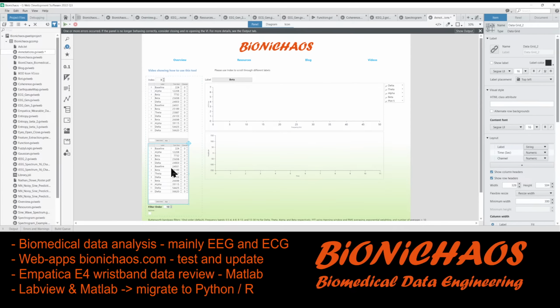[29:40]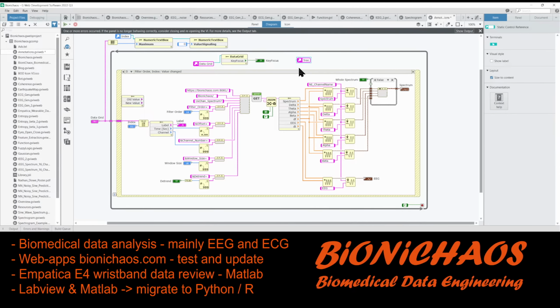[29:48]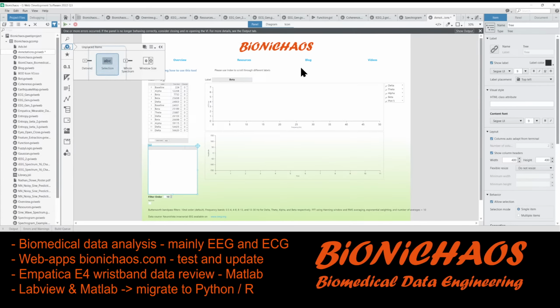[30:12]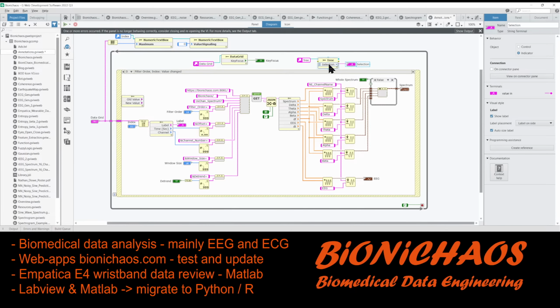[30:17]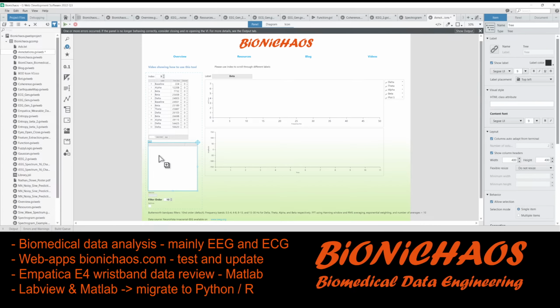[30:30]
If I change this and create reference, it's called, okay, key focus. No, selected selection. Yeah, this is what we want. Is selection. Select the data. We add the stuff into this. Yes, properties.
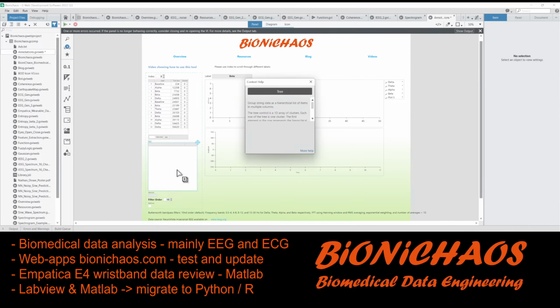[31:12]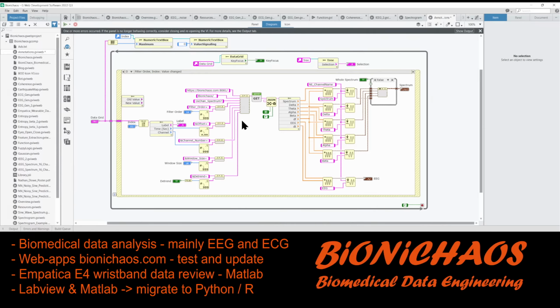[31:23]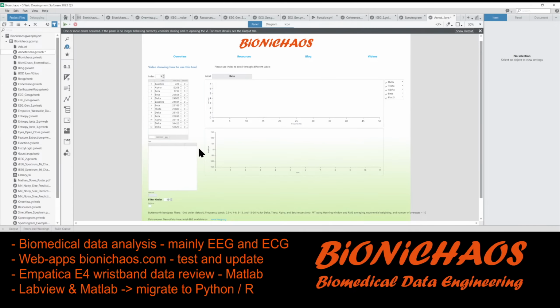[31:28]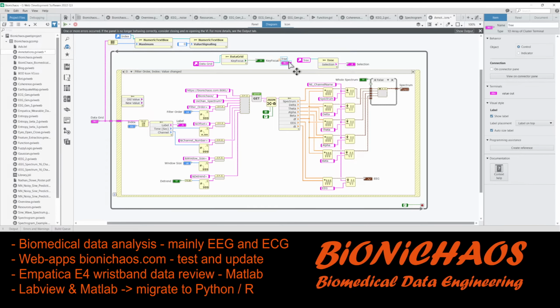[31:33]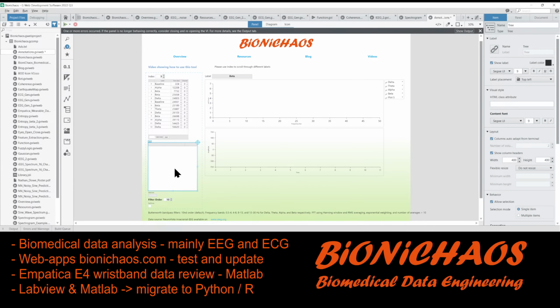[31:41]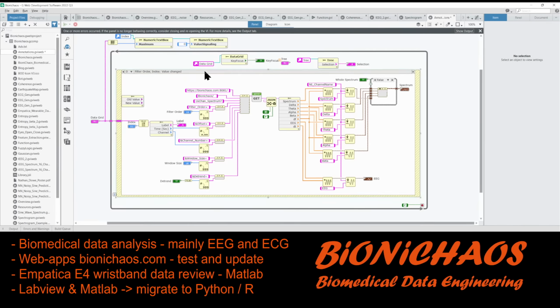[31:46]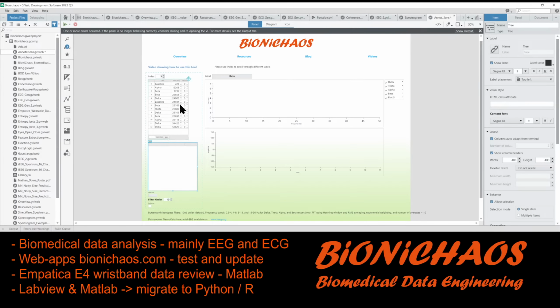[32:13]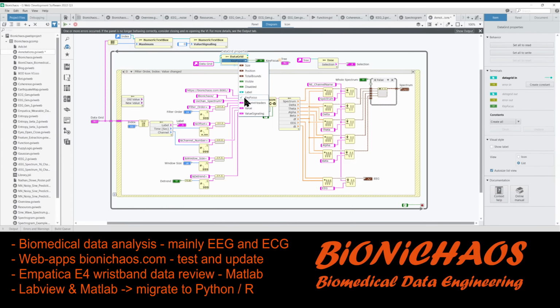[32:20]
Okay, how do you put group string data? Tree. No. How do you write anything into this tree? And is it better than a data grid? Should be better because we have this option for getting selection out of it.
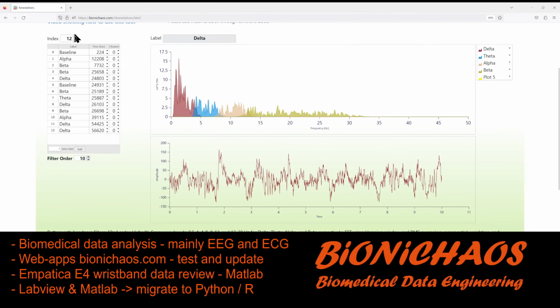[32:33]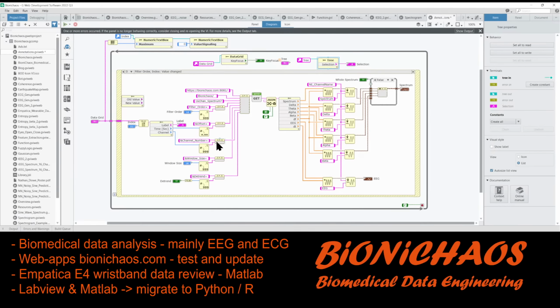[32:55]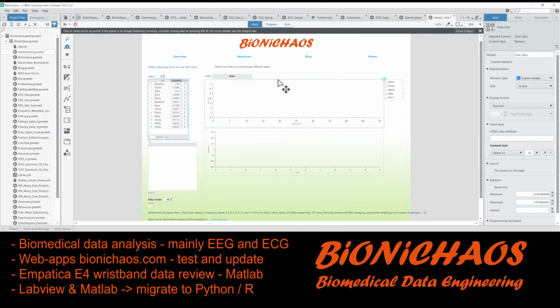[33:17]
So what we're trying to do is, instead of having an additional index that you could just click onto here, this selection, pretty sure in LabVIEW you can do it, will be just exported as a number, 7 in this case. But I can't seem to find a way. First of all, this data grid doesn't have a selection output. A tree does, but I'm not sure how to populate the tree.
Wait, how do you populate the data grid? How did I? Ah, yeah, you just click on it there. To populate this thing.
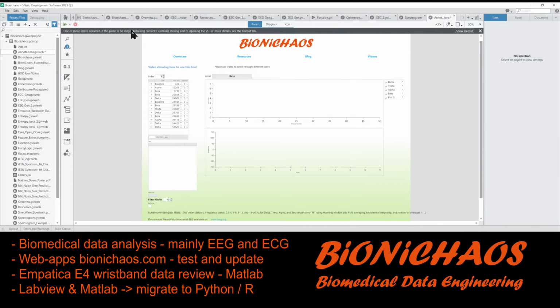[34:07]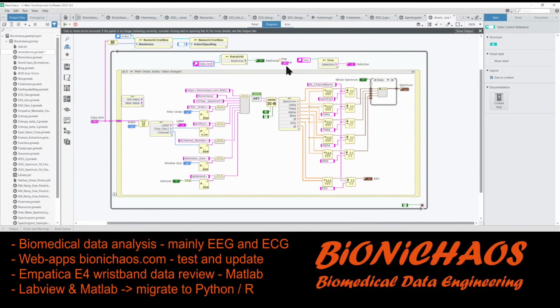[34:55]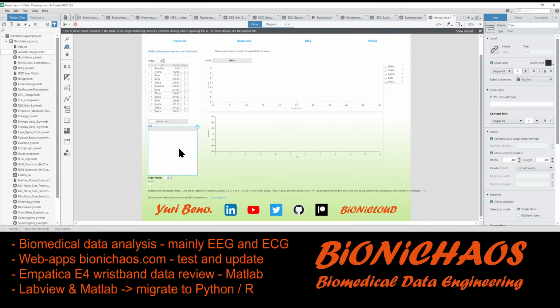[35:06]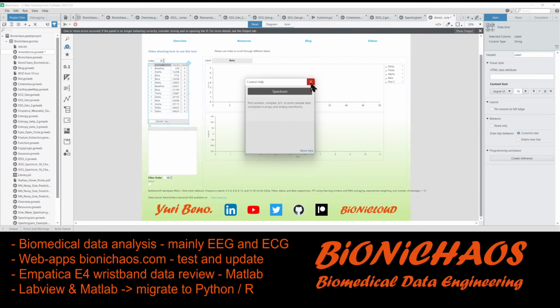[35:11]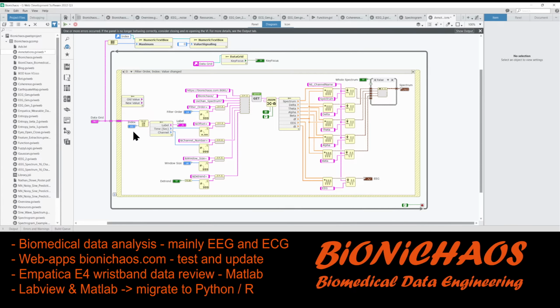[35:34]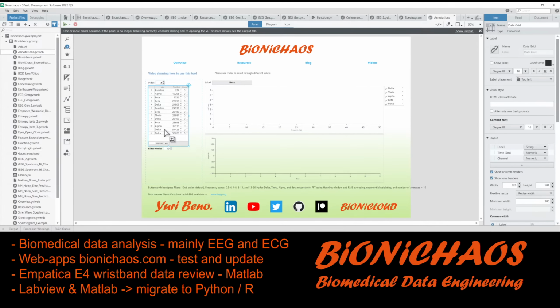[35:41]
Okay, first of all, let's save this as a new VI. How do I save it as a new VI? We haven't made too many changes. We just discard the changes for a second, but we have to figure out how this tree works, because potentially it's better than this data grid, which is essentially just a table. I'll just revert it back to what it was.
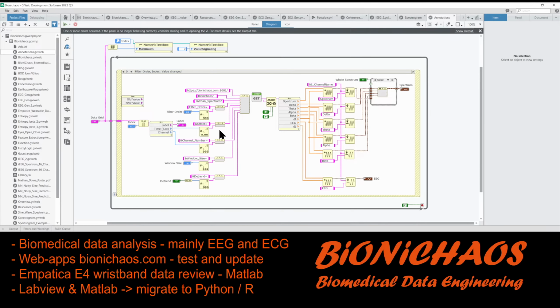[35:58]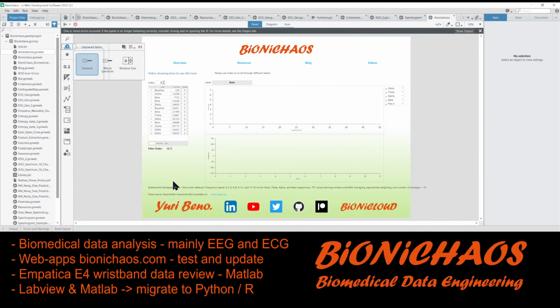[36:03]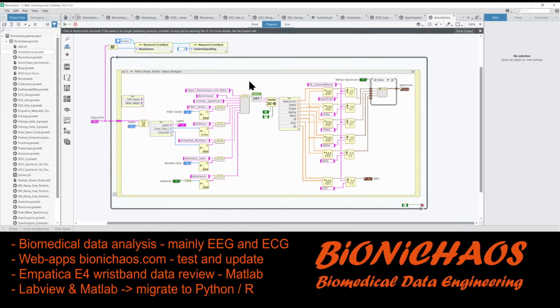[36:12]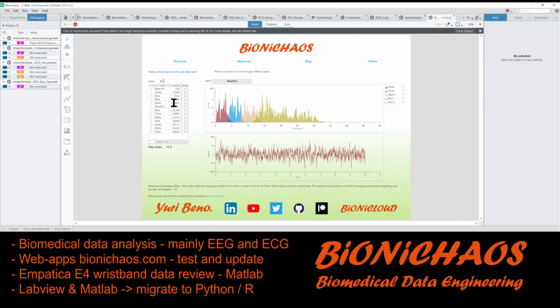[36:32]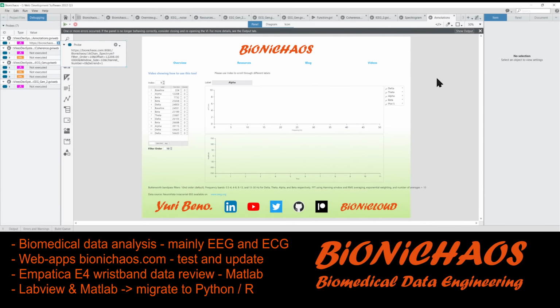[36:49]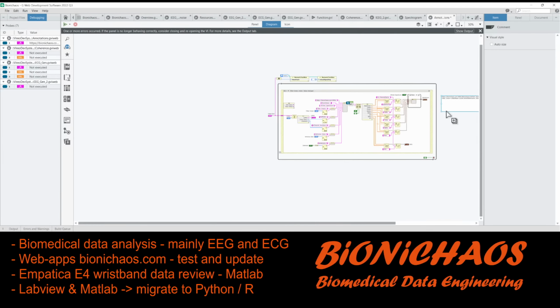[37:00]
Do we have unplaced items? Detrending and whole spectrum. So this is in the API. By the way, what is the API? Let's just put it as one string, because we will need at some stage to do documentation. So this is how you call the API. Turn it into some sort of document later, but yes, that's the API that you can call.
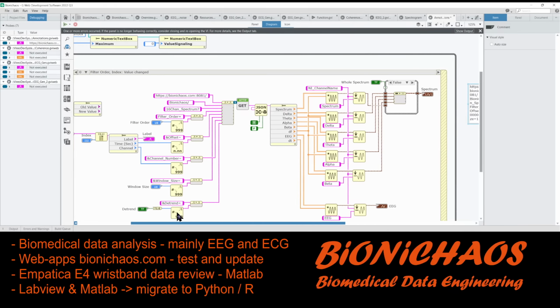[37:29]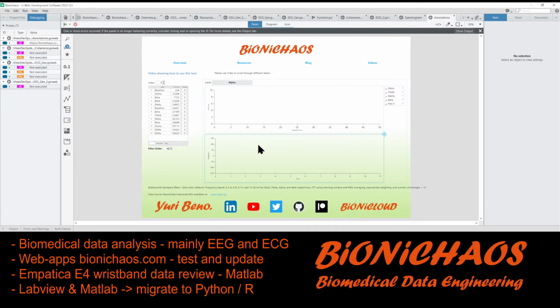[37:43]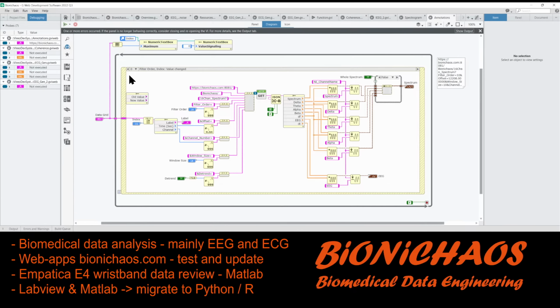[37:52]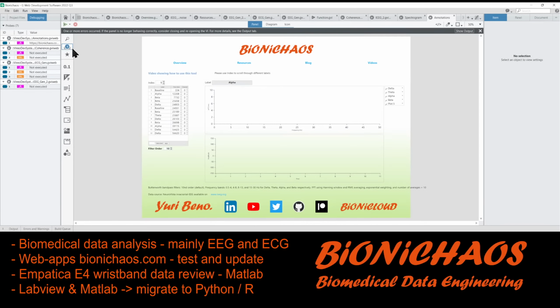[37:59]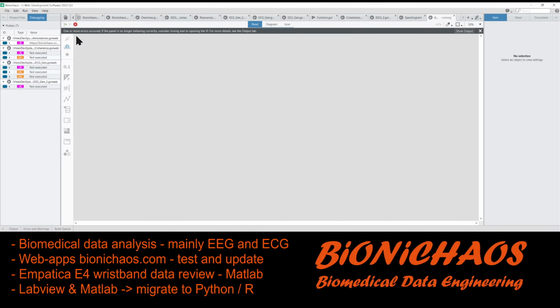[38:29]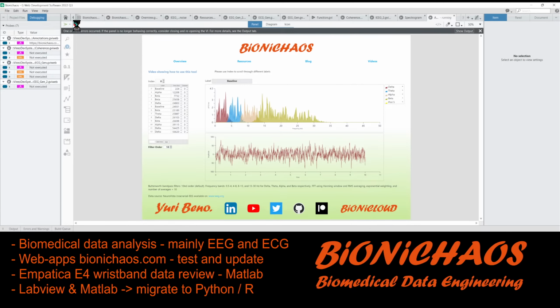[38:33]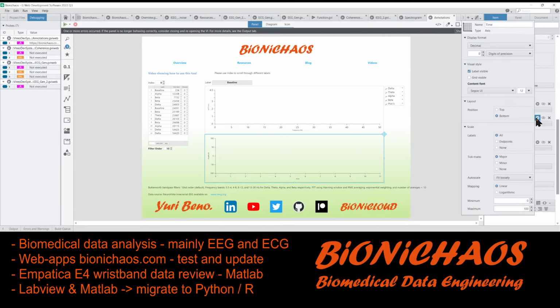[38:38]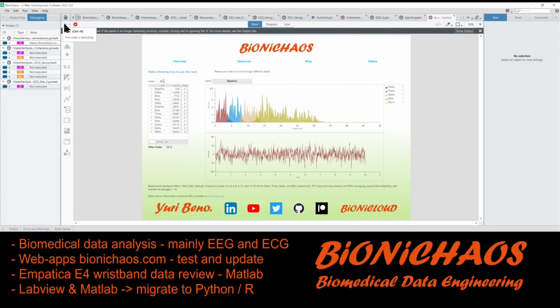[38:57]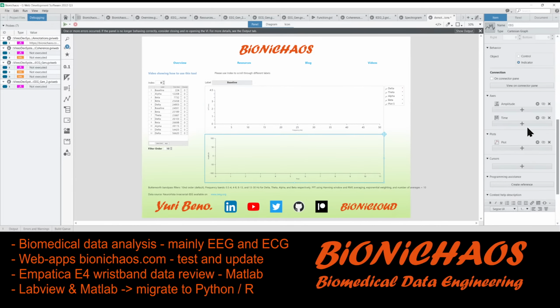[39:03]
What has so many trailing zeros? Save this. And why is this window size? What's its default? It's 10, is it? Yeah, it's 10. It's actually starting off as 100. Change this to 10. Change that to minus 100 to 100, just so it's loading quicker.
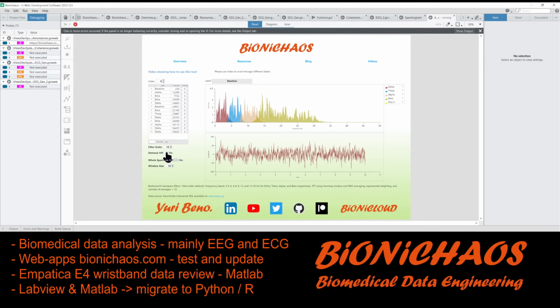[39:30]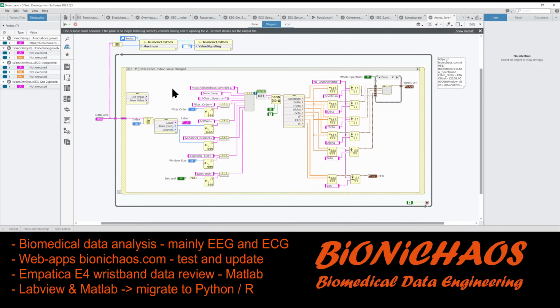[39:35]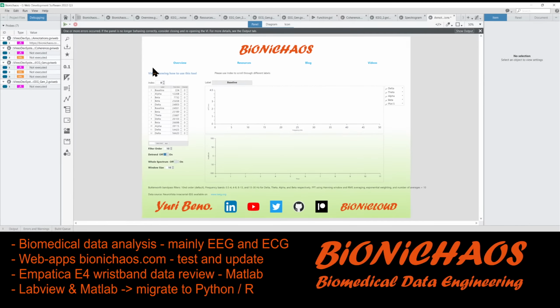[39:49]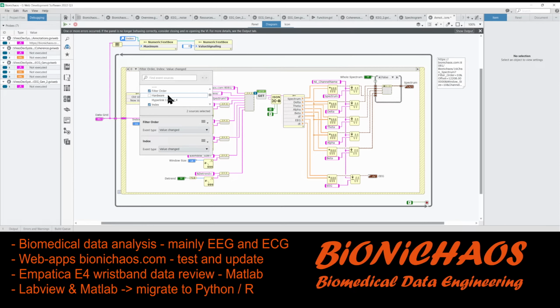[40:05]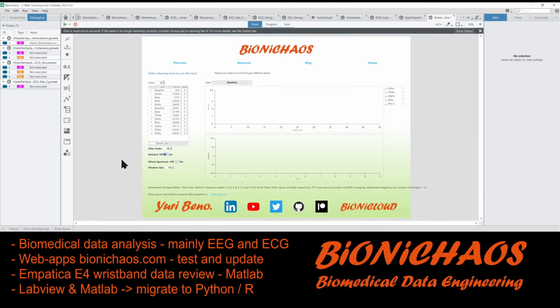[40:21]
And we could add all those: window size, detrend. What else did we have? And whole spectrum. Can add detrend, whole spectrum, and window size. This.
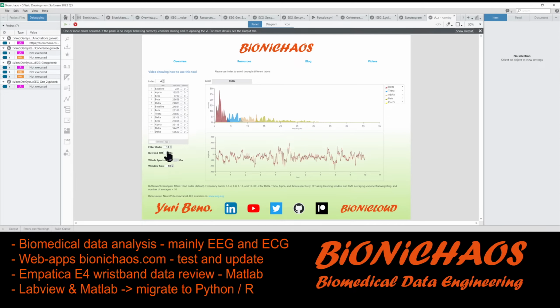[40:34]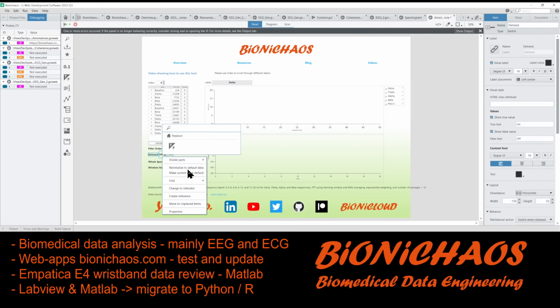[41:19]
Yeah, detrending should be doing a lot for something like this, because it has a lot of DC in the signal. Whole spectrum, yes, works okay. And the window size. So that will be the initial T0, starting time. And then you could change your window size if you wanted. But the default window size is 10, detrend default is on, and whole spectrum default is off. That's okay.
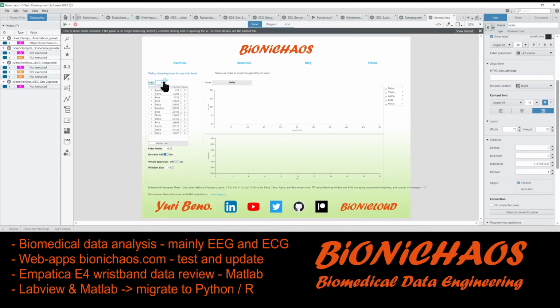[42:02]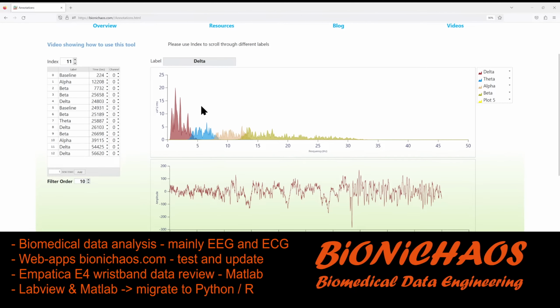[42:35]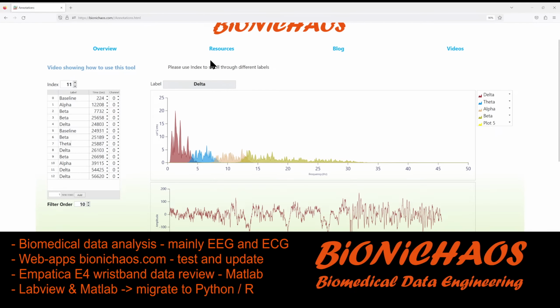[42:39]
And publish this at the end of the stream. But this will be a short one as well, because some friends were complaining that the streams are way too long. And as I said, eventually I will make them shorter, trying to keep them to one topic only. But it takes some time, because they are long, but also because they are on YouTube already, and when I stream I don't actually save locally. So this one will be updated later.
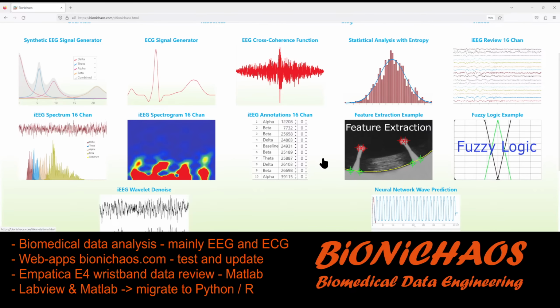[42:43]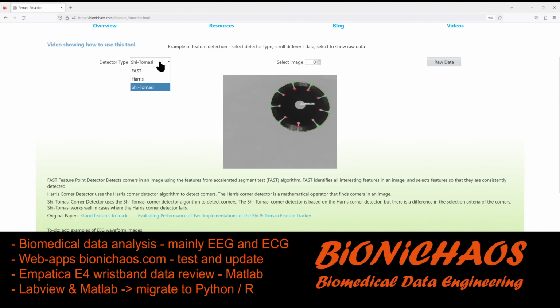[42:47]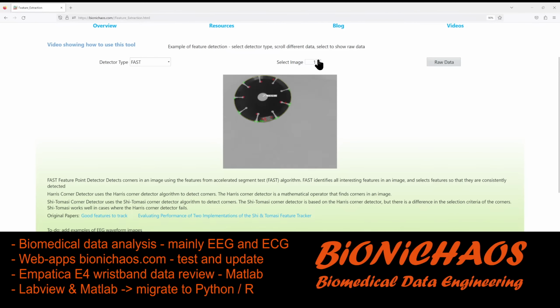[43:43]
The new changes: in this feature extraction, we need to try some EEG and ECG in it. It will find the features. The problem with this image is that this algorithm has calibration images. I think it was a different algorithm, to look at it again, but essentially we want an image of an EEG or ECG trace, and for it to label that, because obviously this example is not very relevant to biomedical engineering unless you're using something like this in surgery. This was a joke, by the way.
And again, the new tool will probably be separate to this anyway, because this one just works. It's quite handy to assess the difference between these three different algorithms. But it will be interesting to see if one of the ones performing poorly on this particular task will perform better on EEG or ECG. So that will be an interesting experiment to do.
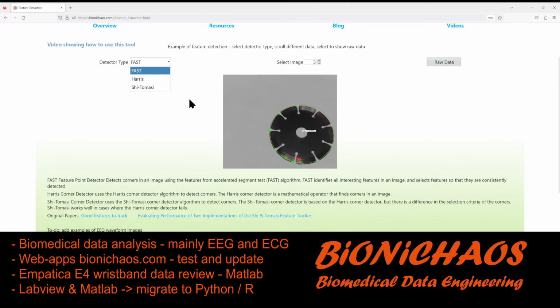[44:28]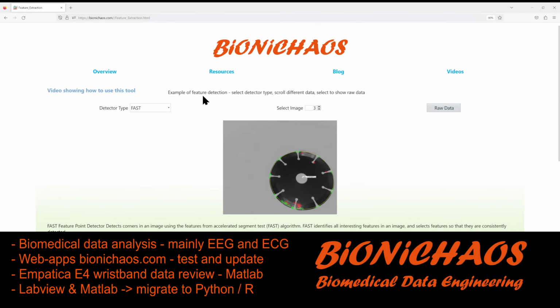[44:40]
And we make a note of it, and we have to break this task into multiple pieces. And hopefully it will appear soon.
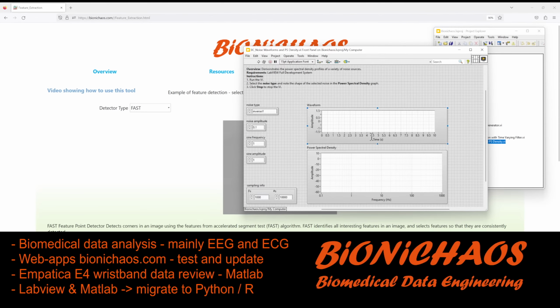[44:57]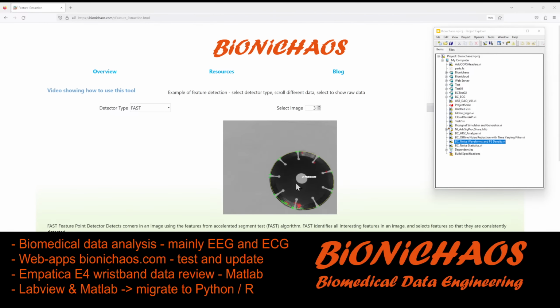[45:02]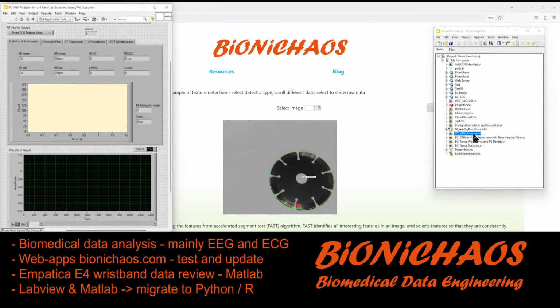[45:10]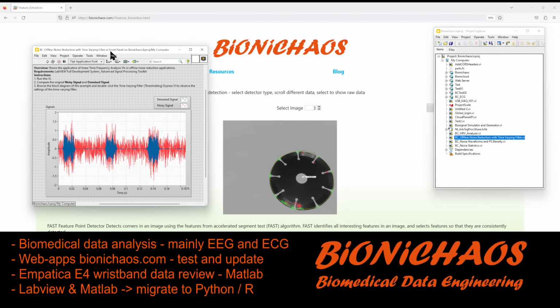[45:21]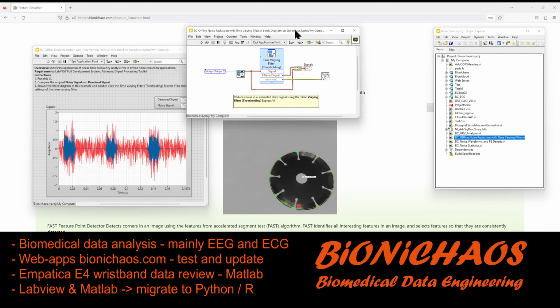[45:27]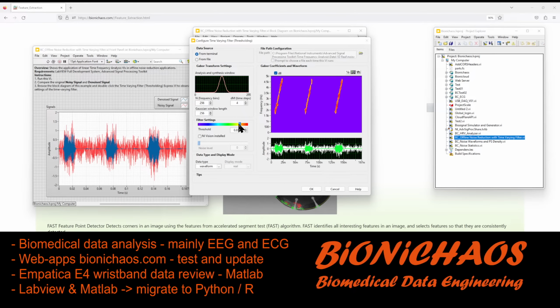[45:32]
But that being said, there is actually another tool that is labeling ECG. This one. There's another noise reduction thingy, which is quite handy, especially if we can use a tool like that. It's actually using.
Yeah, it's very sensitive. This one is less sensitive. So you can essentially use a graphical tool like this to determine how much noise you want to leave or remove. And eventually, if it's too high, you get your signal removed as well. So not very useful. Or you can set it to remove just a little bit of noise, but then you get, well, yeah. So it will be case specific.
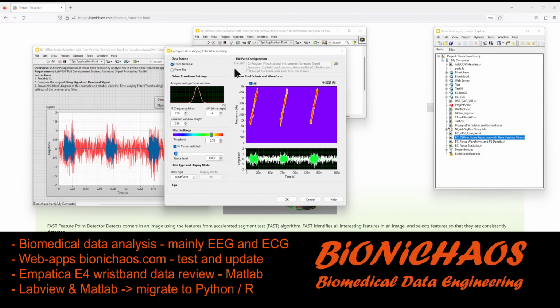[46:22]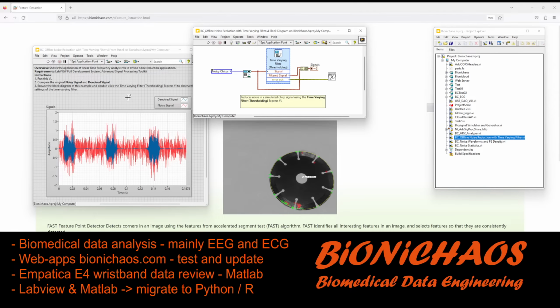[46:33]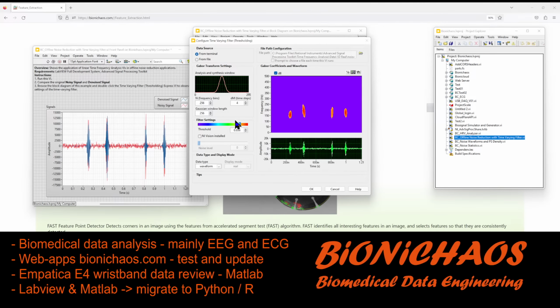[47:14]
File from terminal. Yeah, ideally, I don't know. This tool was created ages ago. Yes, they need to be able to select different. Yes, you can. Right, but some of them it doesn't actually work well. It's something with real noise in it, so none of the synthetic noiseless signals. That sound, yeah, works okay for this.
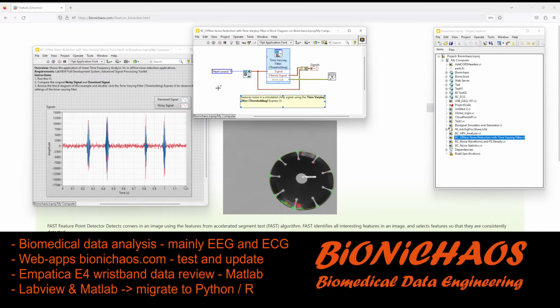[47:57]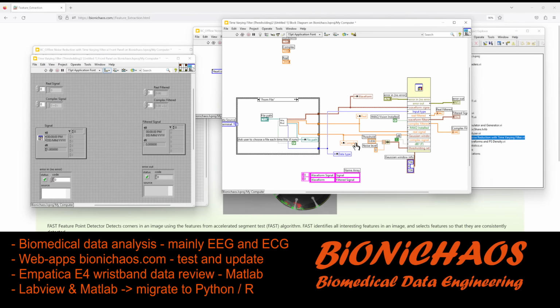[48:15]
Not sure when adding this NI Vision. Change. Wait, but that doesn't change anything. Sure, what's that doing? This one. Yeah, this algorithm is quite finicky. And the question is, do we have a source code for this to check that we convert that open front panel? We have the source code, doesn't look anything like.
We have another tool there, another tool here. We have help, those things. Threshold, TF chart. It's using NI Vision, just the LabVIEW image processing, discrete Gabor transform. That's a standard thing. Yes, we want to get it down to like textbook stuff.
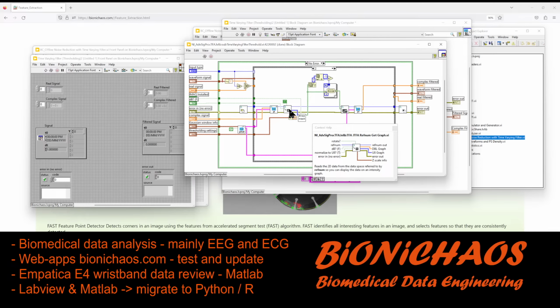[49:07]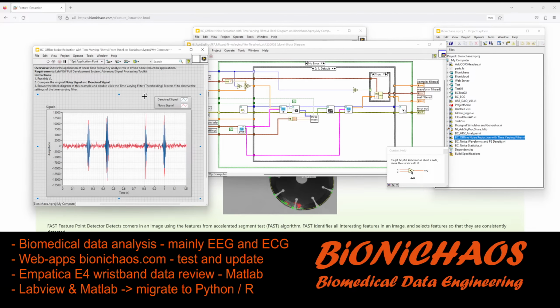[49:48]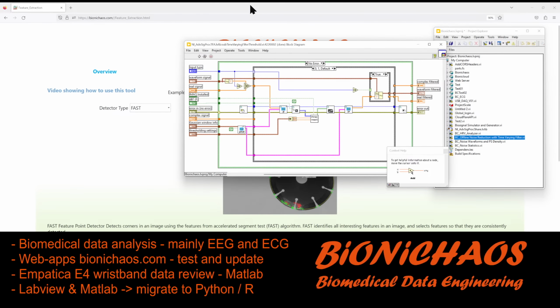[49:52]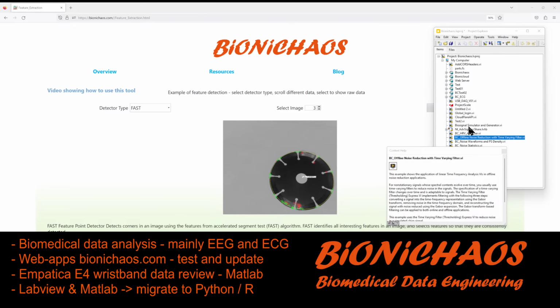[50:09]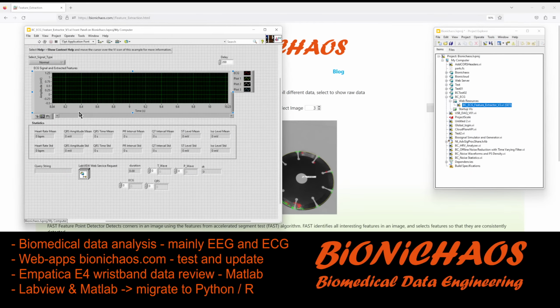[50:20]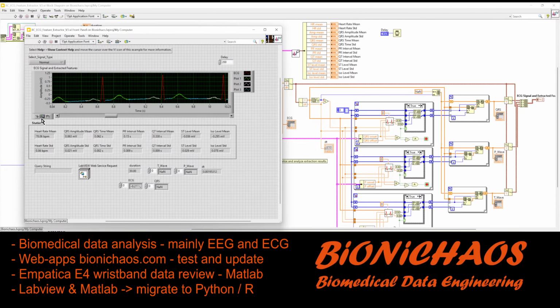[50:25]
But that's actually not what I was originally looking for. I was looking for, did I really turn it into? Yeah, ECG feature extractor. The one. Yep.
Yes, something like that. I actually made quite a few changes to it. Originally, it only had 3 waveforms, but in ECG you want 4 of them. I was just trying to turn this one, which is unmarked, white, and then have essentially the T wave in blue, the P wave in say green, and the QRS wave in red. Oops. But yeah, I can also change it later.
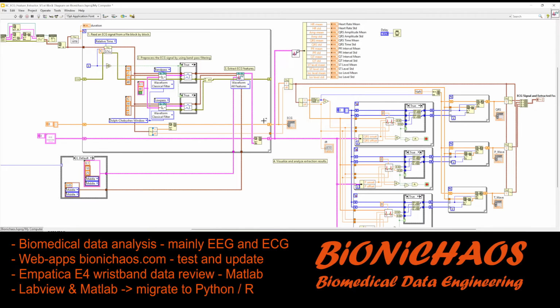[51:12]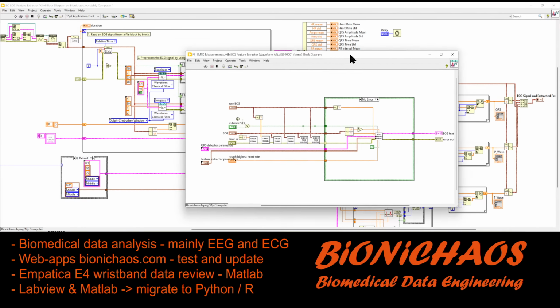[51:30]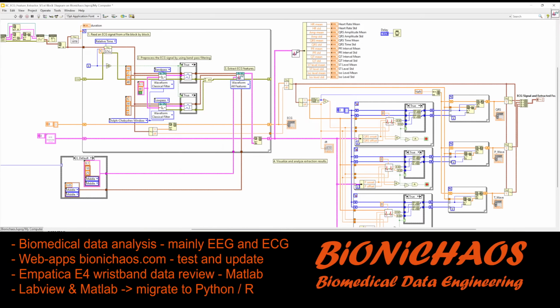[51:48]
Is this the one? Well, right. This is all the source code for it, is it? Ah, extract ECG features. No, that's the main function. I think that's the one. That's some sort of checking. Then you had this one, features, and this is the one that I don't have source code for, which is unfortunate. So eventually we'll have to use something else, but we could use this for comparison's sake.
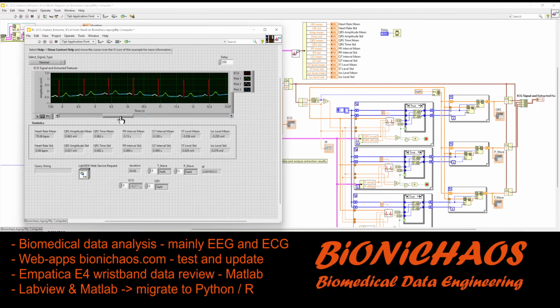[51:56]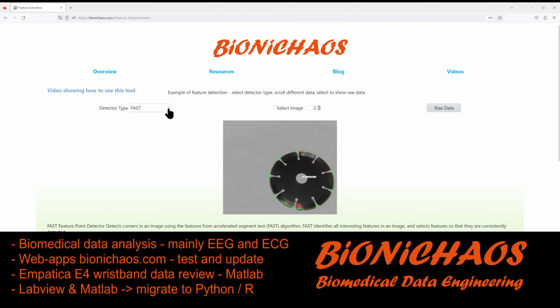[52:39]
This will be another way of labeling data. So the result will be similar to what we have here, but optimized for ECG. Whereas this one is more generic. Just check.
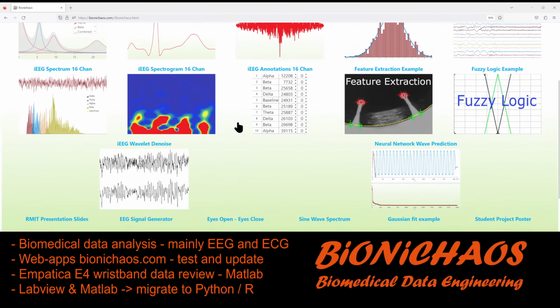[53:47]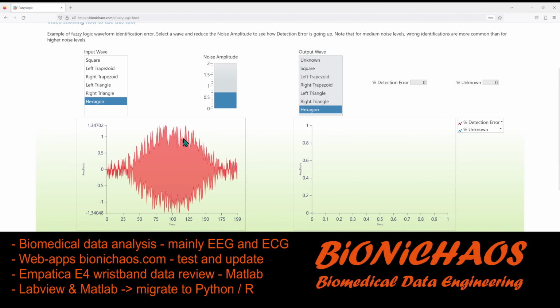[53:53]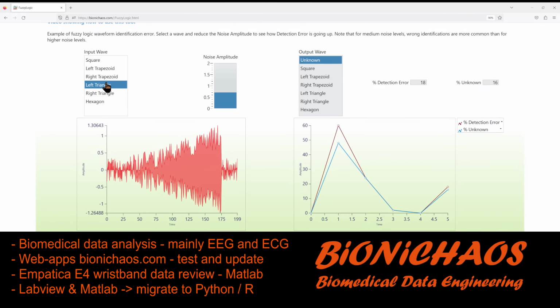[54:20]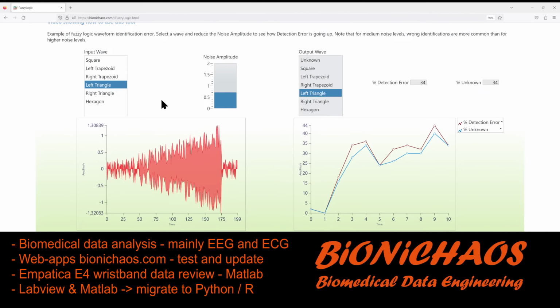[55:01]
And same fuzzy logic. We wanted to work on some more meaningful signals, not just trapezoids and squares, as much as they are fun. You could just have like an envelope of QRS shape, for example. But yeah, that will be. How do we do that? Might take this one offline as well. Think about it some more.
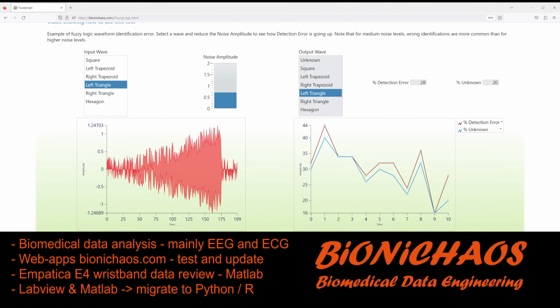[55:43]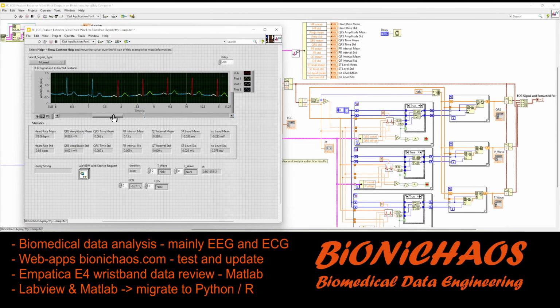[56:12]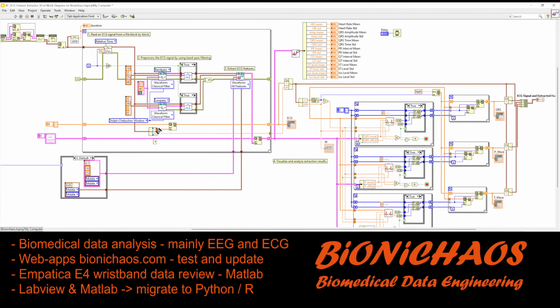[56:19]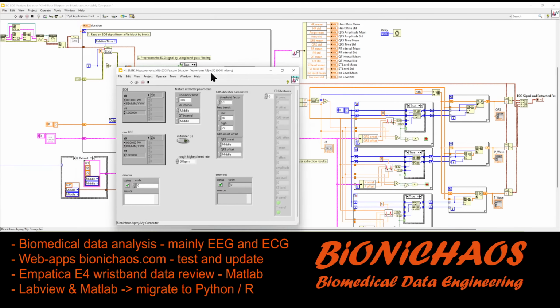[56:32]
I mean, ECG is easy, right? You have that detect that doesn't make any mistakes. There's one here, and yeah, this one wasn't trained on any specific ECG waveform. It should just work.
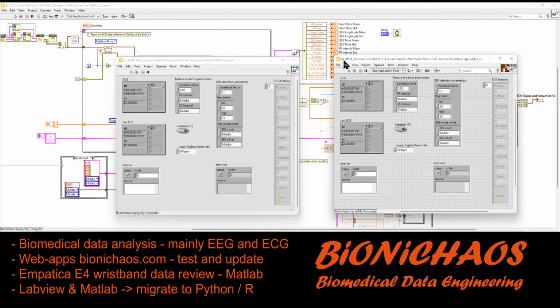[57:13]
Middle. It changes this. You need to preset those, or here is detect threshold factor. Anyway, this algorithm is obviously specific to ECG. So yes, we need to test it with just a random ECG.
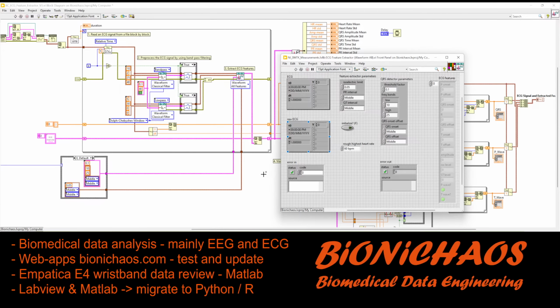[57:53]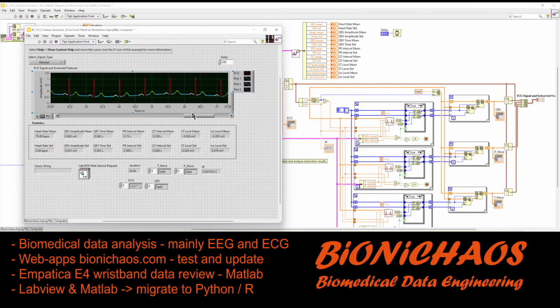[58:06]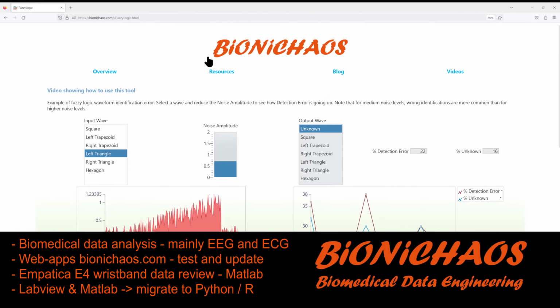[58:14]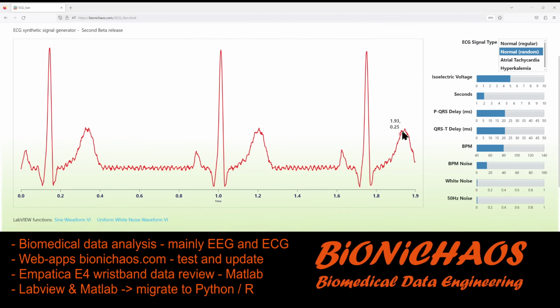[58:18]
I will do it with, can I record my own? But no, if you need that 9, was it 9 or 12 leads to get all the features, don't you? Yeah, I'm not actually sure about the ECG. In theory it would be easier than EEG because it's more predictable. Well, unless something goes wrong. Yeah, like your noise, BPM noise. If it's way too random, would the algorithm still work?
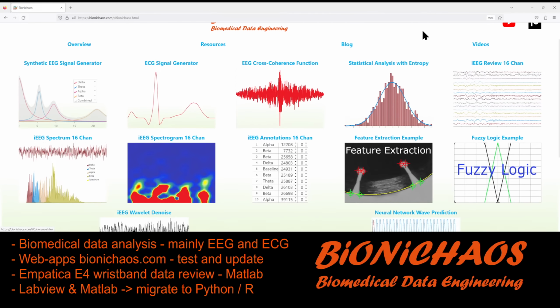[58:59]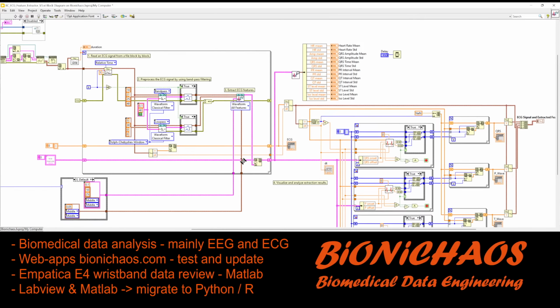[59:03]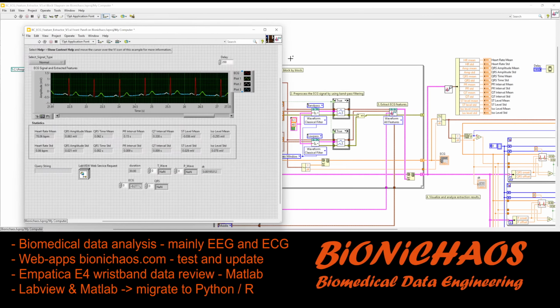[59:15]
We can check that. Let's take it step by step. This thing we already turned into an API last time by adding this bit of code, that input there. Yep, that's what's turning it into a web service request. Then we wait. Where's the control H?
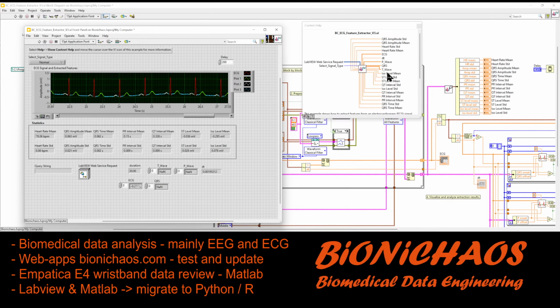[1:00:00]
That's select signal type. So we have an option of 3, and then it will give us all this stuff as output. It gives us the whole ECG, P wave, QRS, and T wave. And we published this already, I think we did. Just check the web server.
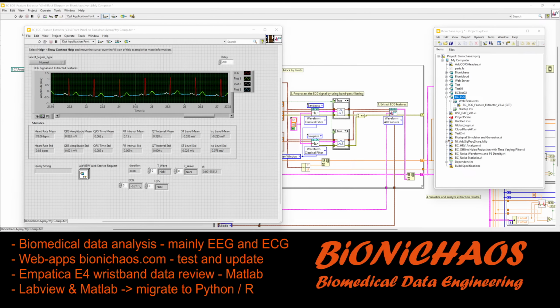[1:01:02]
A LinkedIn friend was saying how they're not interested in the web server and LabVIEW and this and that. Just give me the algorithm, whatever. But without all this stuff, no one would even have access to this at all. But yes, you do want to keep the right balance between data engineering and data science. Obviously, you're trying to optimize for data science. Nobody really cares how your tool was made, but you kind of have to a little bit, just the right amount. Let's check if what's BC ECG.
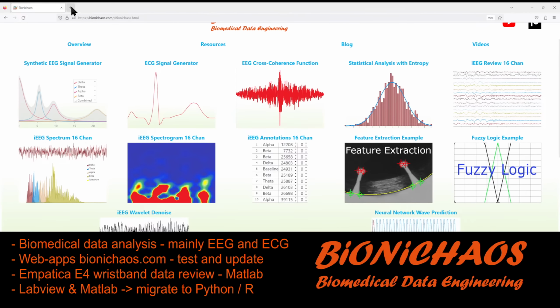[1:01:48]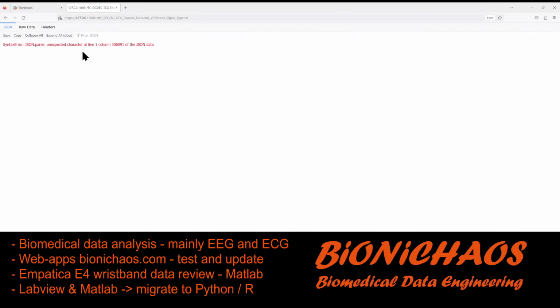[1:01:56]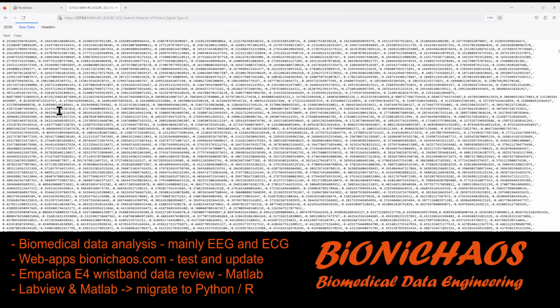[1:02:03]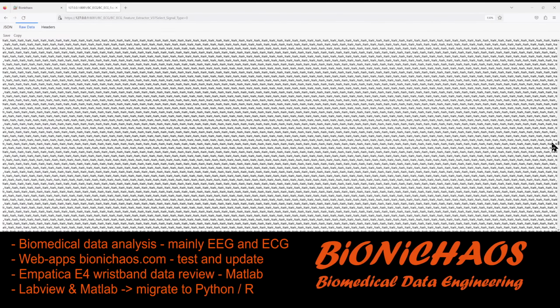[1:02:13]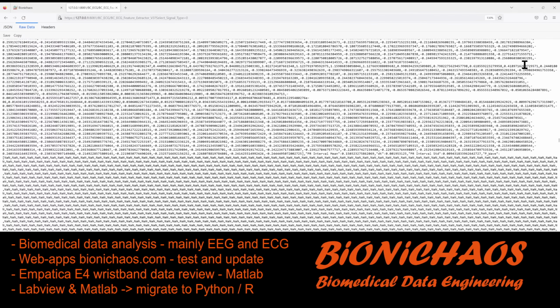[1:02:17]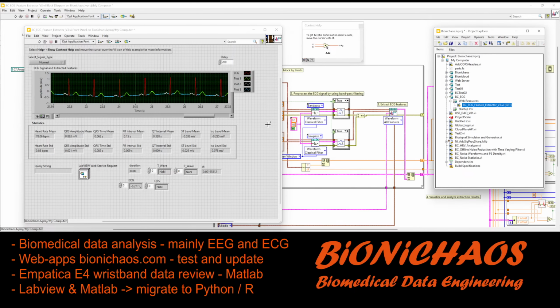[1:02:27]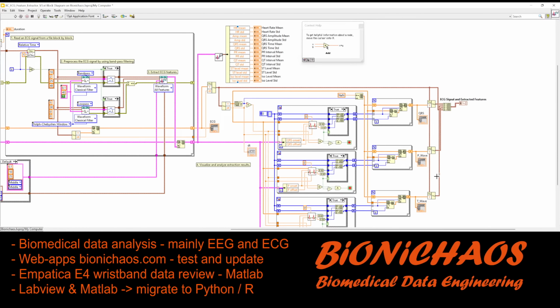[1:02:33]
Yes, it was published before. Let's see. Yeah, I want to use the secure version URL. Pop it in any browser. Select any type. Make it 0. Ooh, JSON, unexpected. This is actually fine, I think, because those are the NaNs, which is okay. I'll be able to sort them out, I think. Yeah, those NaNs. So in the image we don't have anything like the red, it will be just that and gaps in between.
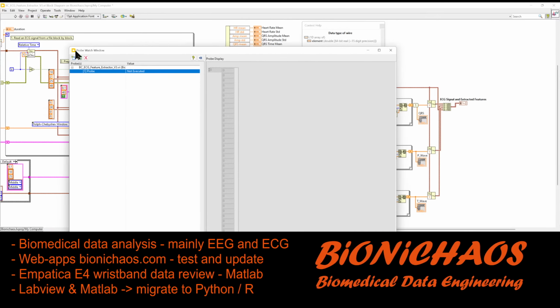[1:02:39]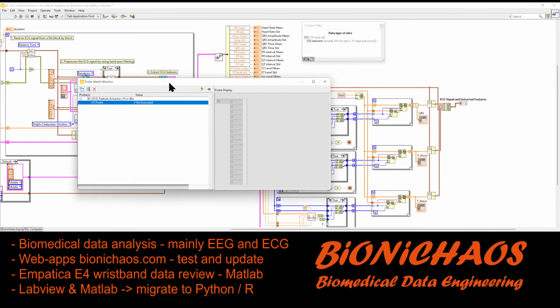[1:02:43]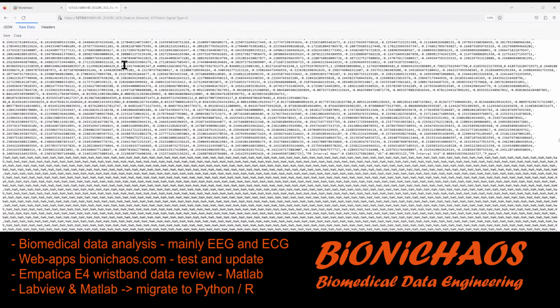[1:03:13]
So say if you take QRS, put a probe on it, this probe is way too large. Yeah, you will have a lot of NaNs and then the QRS will be there. So there will be nothing, then QRS. Anyway, you get the gist of it. So this one is okay to use, I think.
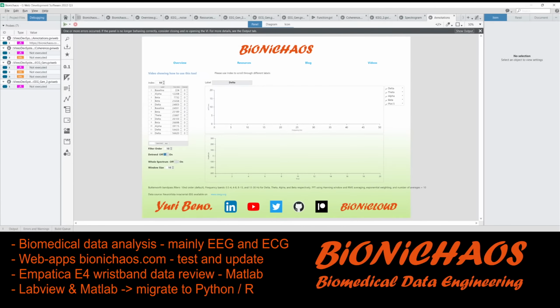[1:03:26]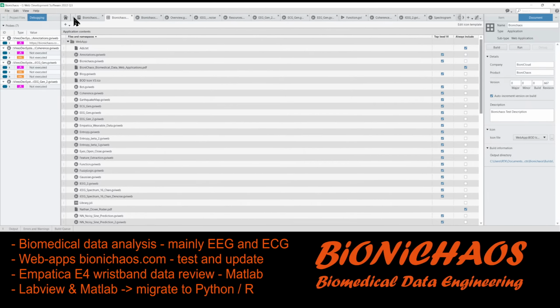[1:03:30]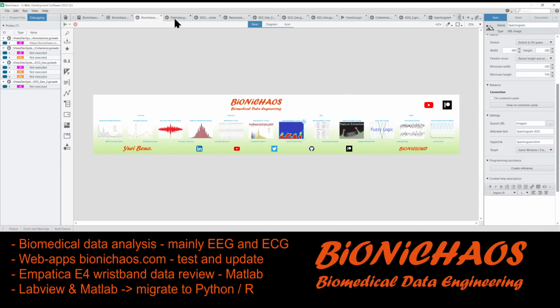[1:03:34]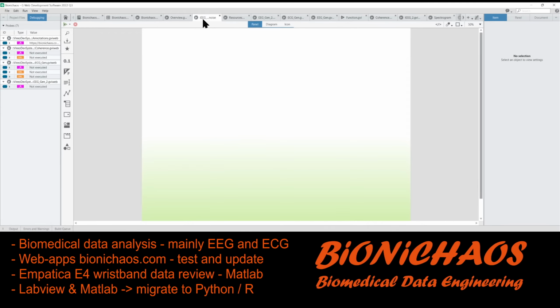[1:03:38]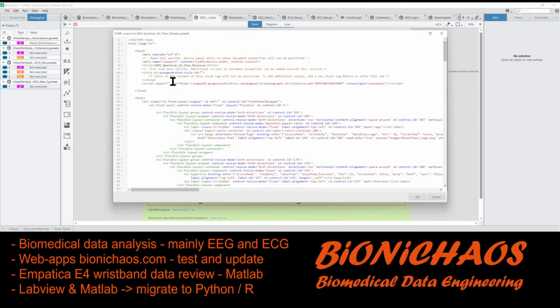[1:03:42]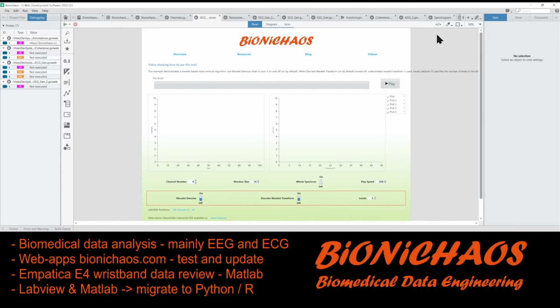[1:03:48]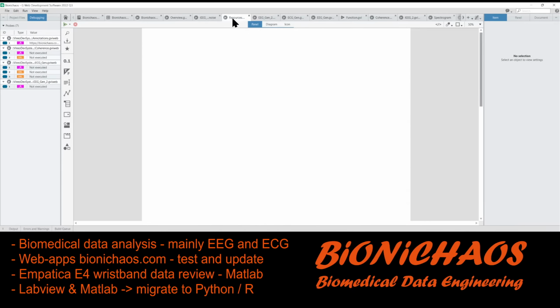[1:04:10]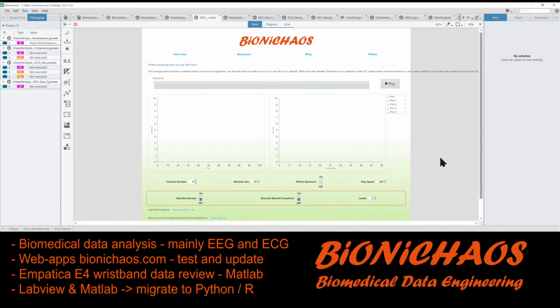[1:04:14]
So we can create an API call like we did many times before. Should we use one of those things that has a template? Just check it as that Google syndication. Google syndication sounds fancy. But I need to keep that line there for the site to be monetized. Obviously, when we create a new tool, we actually don't want it to be monetized, but we're able to turn off monetization from the Google AdSense thing. And again, it's one of those things that nobody cares about, but I do. So bear with me.
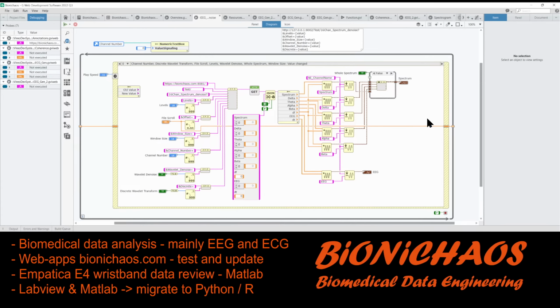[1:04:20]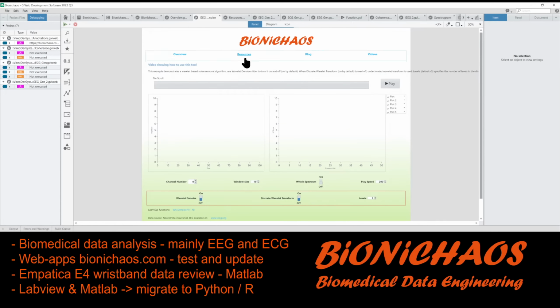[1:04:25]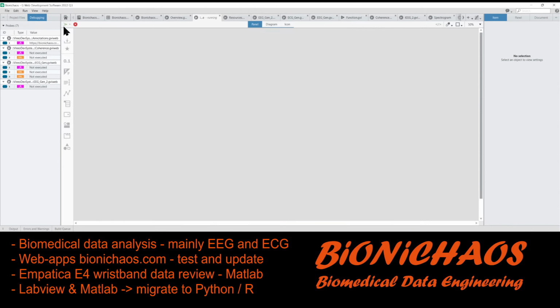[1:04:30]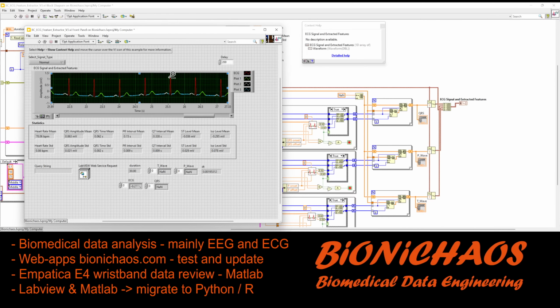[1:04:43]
Okay, question is, can we use one of those as a template? So what eventually will that web application GUI look like? We don't want it to look like the original thing because it's pretty bad. But yes, it essentially has one window with the ECG. Yeah, it's pretty basic. So just one window and a bunch of values output that you could ideally have calculated per window instead of for the whole thing, because this is a 30-second ECG with labeling, but those values could be calculated for a specific window that you select, not the whole thing.
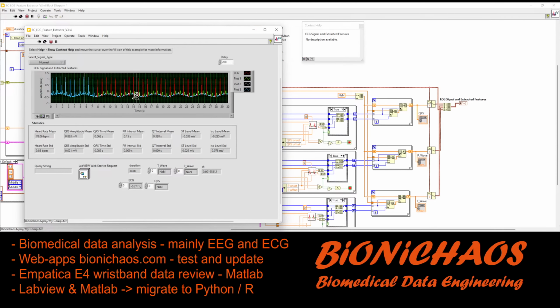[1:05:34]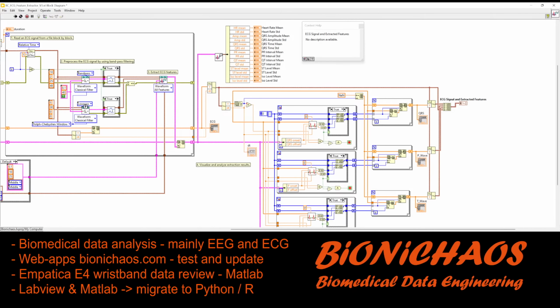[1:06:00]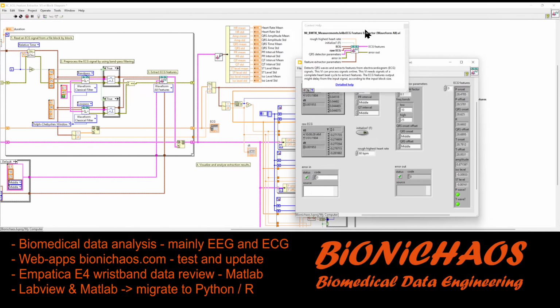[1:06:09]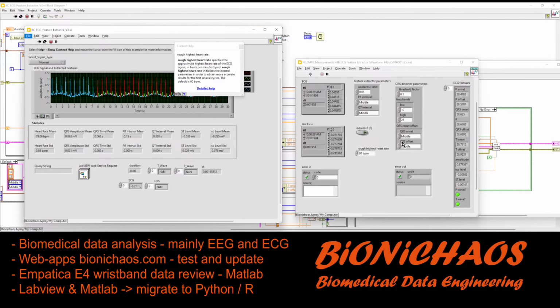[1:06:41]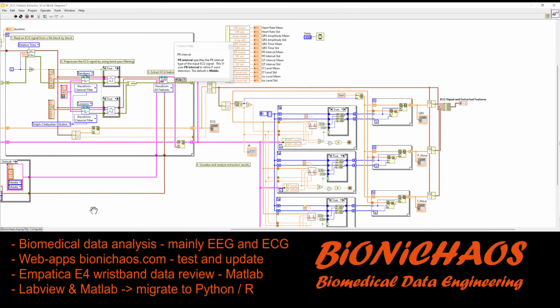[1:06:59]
And also, I assume it's using 7.5 seconds for training and then starts labeling after. And how do you reduce this time or set it? And we don't have the source code for all of it, so might not be able to tell. So all that algorithm needs is some limits, PR intervals. You have to say that T naught is not needed. Need a rough estimate of the highest heart rate. It doesn't seem to do anything. This is reverting to default because that's a clone. So it's being controlled by this. Where's the input for this thing?
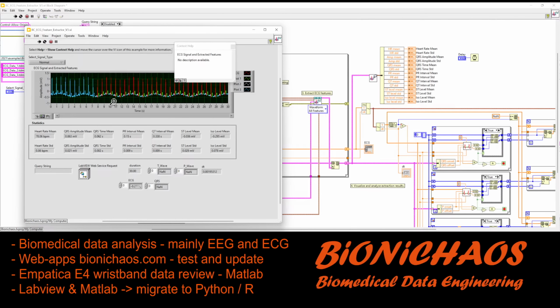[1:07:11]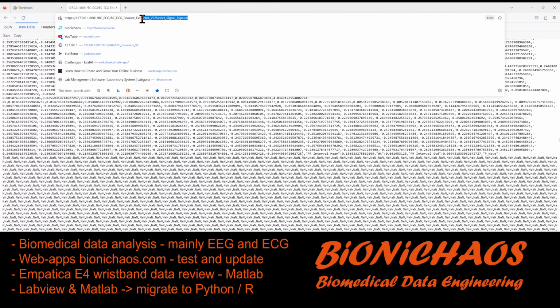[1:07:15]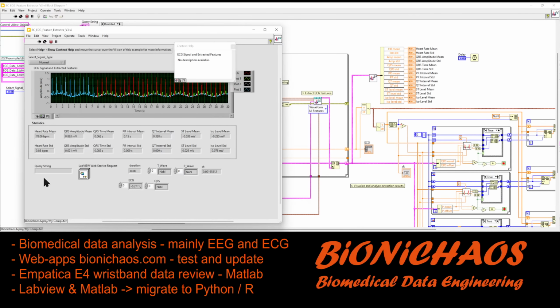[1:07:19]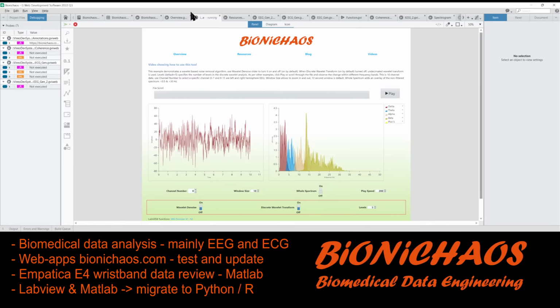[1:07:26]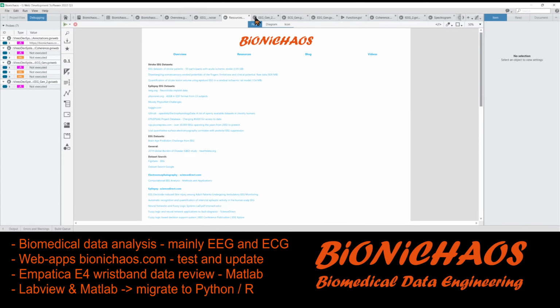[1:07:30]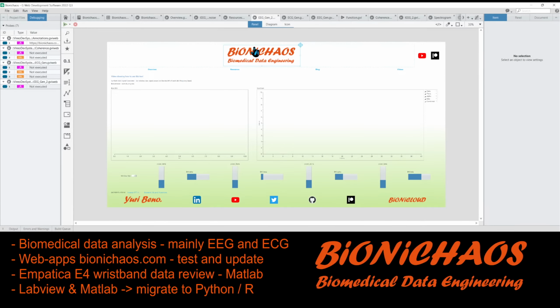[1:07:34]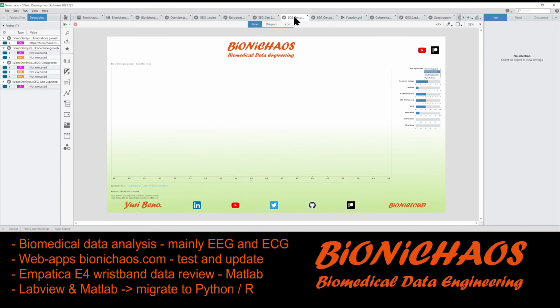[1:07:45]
Anyway, back to the API. So we created this. It should work already. It should be easier for me to troubleshoot once the API is created. I'm just looking for one of the previous APIs to use as a template. So it will be something like this with just one chart. You need one chart. And some, well, those won't be input values, they will be output values. We can use this as a template. We have the one chart. What's this one called? ECG generator, ECG gen.
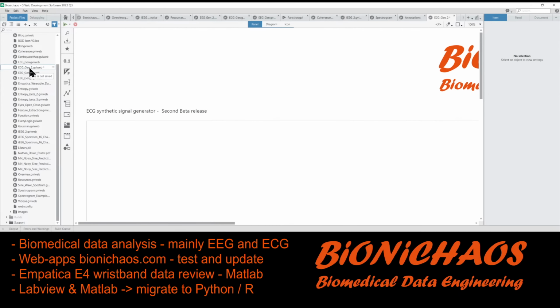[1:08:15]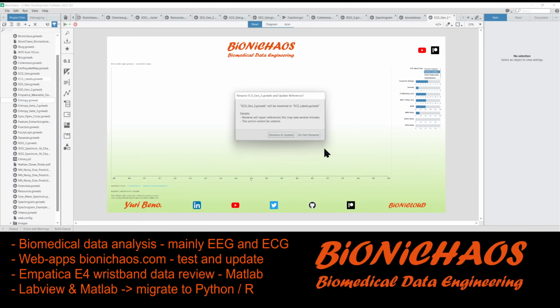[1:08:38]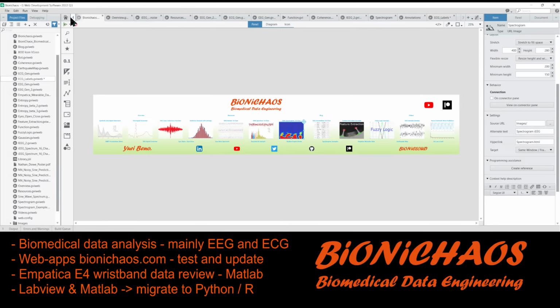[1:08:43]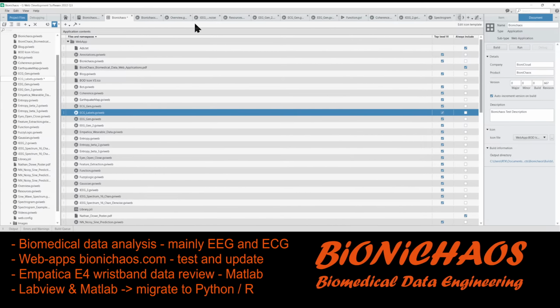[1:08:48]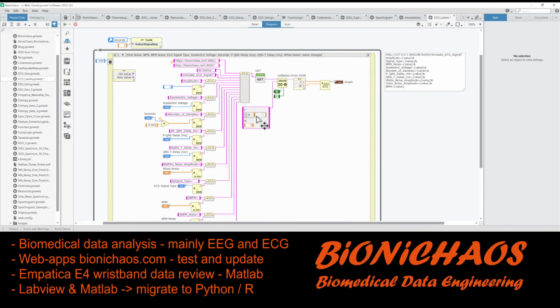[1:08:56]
Let's create a copy. Duplicate. ECG gen, and this will be ECG labeling. In name, ECG labels. I need to tick this box in here so the API will be available on the site, and we need to get rid of most of this. So first, this will be the API call. This will be 0, 1, or 2. Have 3 options. And that will be the only input at the moment. The only input.
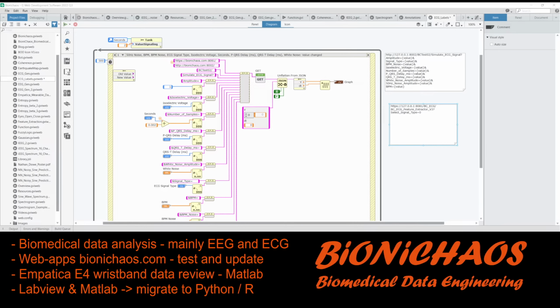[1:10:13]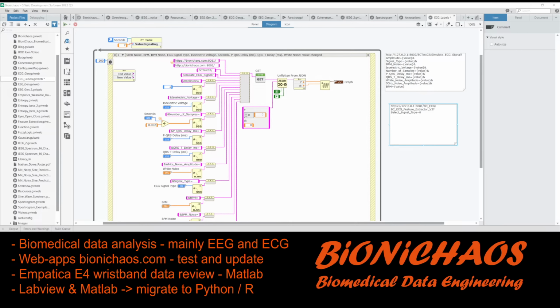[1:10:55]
Sorry, getting distracted by the YouTube analytics thingy. Check my sound as well. Still going okay. Well, yeah, 'cause this microphone is wired, so obviously it's not going anywhere.
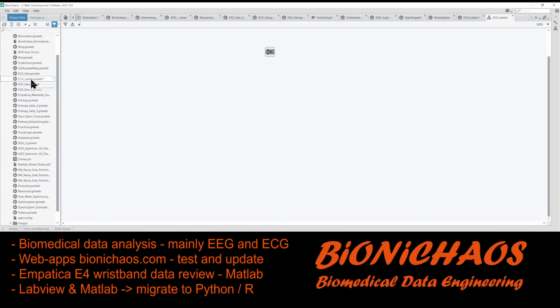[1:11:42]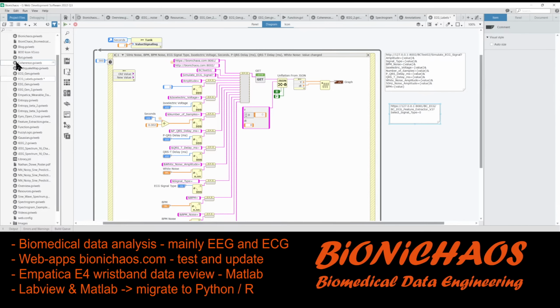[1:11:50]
ECG feature extractor. Yeah, it's a better name. ECG feature. Whoops, what did I do? Add. And click rename. Rename. ECG feature extractor. Okay, so we only have the one input for now.
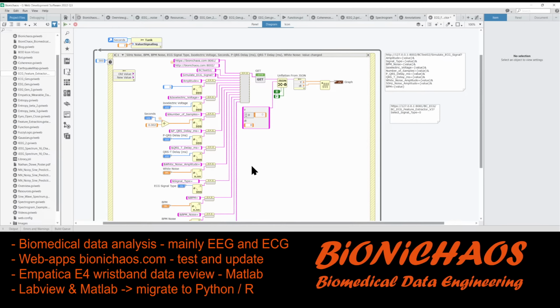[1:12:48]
Later we'll combine the two. We'll have a generator and extractor to compare, to see how well the feature extractor is performing on a more randomized ECG. So essentially you could increase the noise in the ECG generator and see when this algorithm, the feature extractor, starts failing us. But for now, just have the two separate things working.
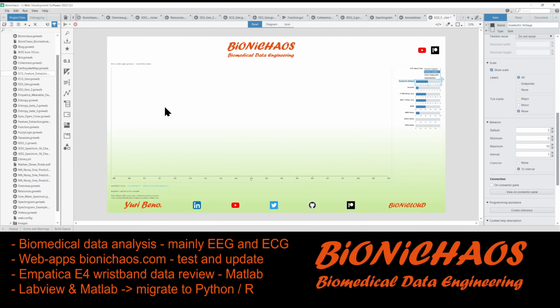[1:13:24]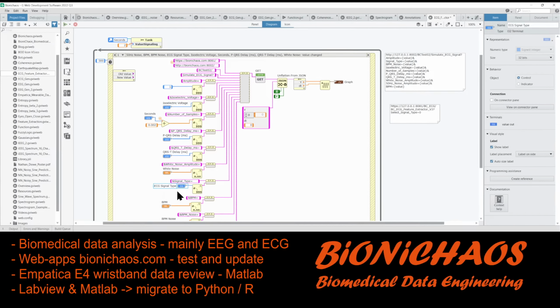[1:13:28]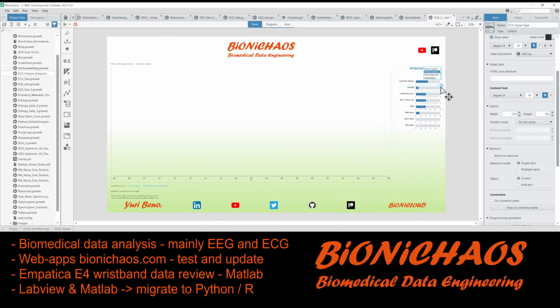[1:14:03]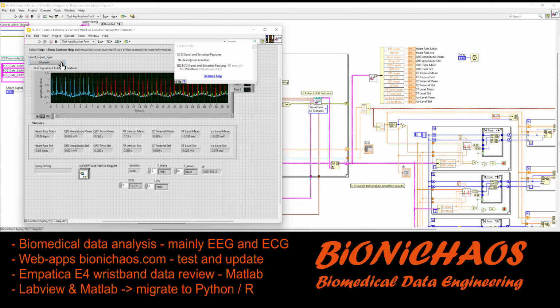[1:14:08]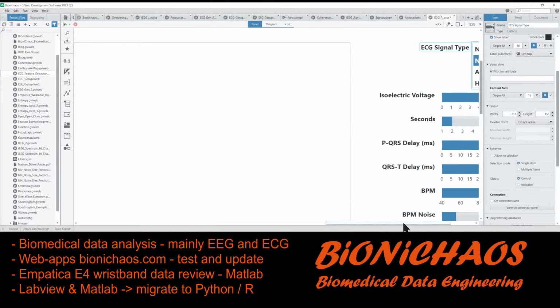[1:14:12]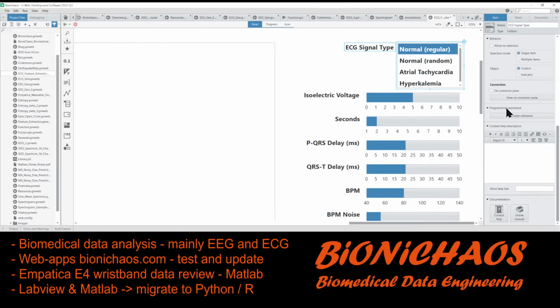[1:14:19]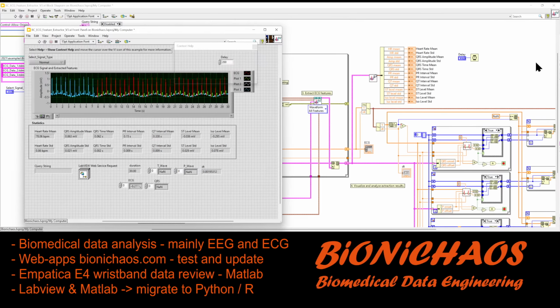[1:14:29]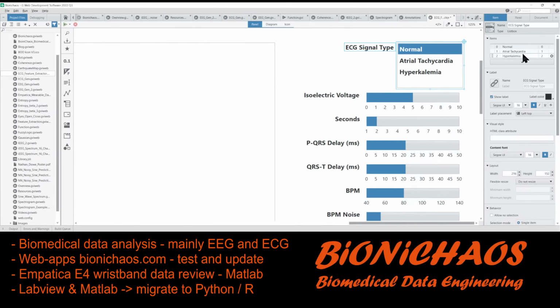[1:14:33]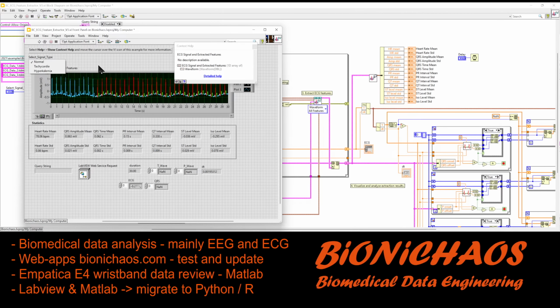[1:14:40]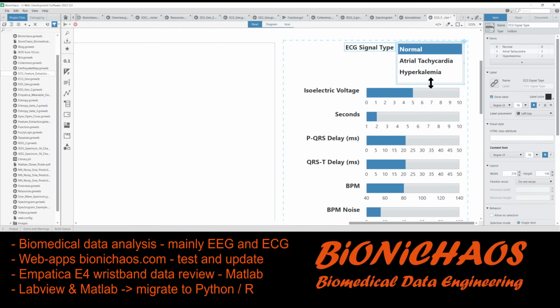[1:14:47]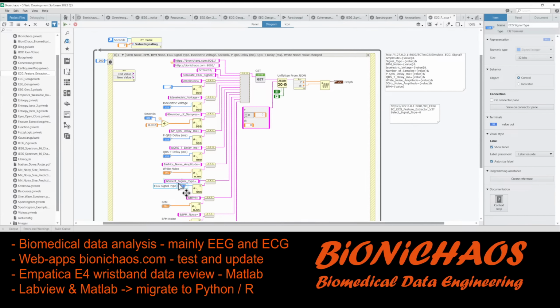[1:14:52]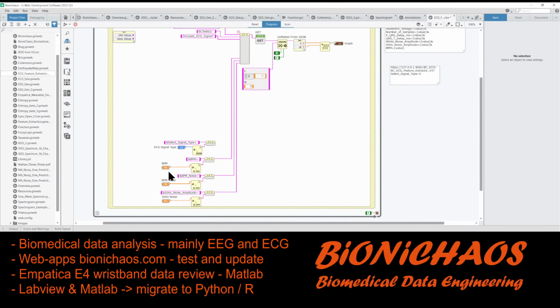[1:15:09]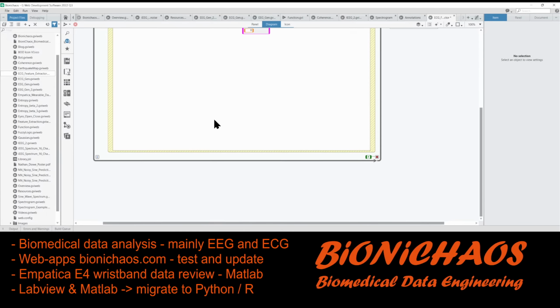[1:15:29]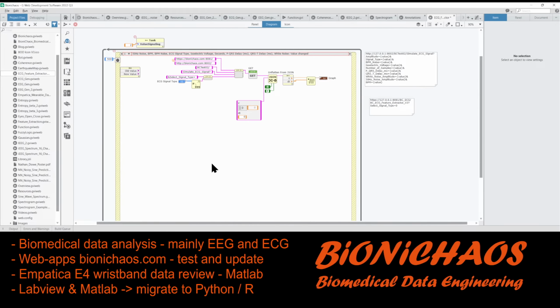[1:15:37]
Essentially, the only thing we need. We can get rid of most other things. Control V. Get rid of that as well. On top there. Make this short. Let the output there, and clean it up a bit. Don't need all that space. Keep it simple, simple, stupid. This seems like a bug where you need to select it again. Need to change the name, so get rid of that. That's the actual API.
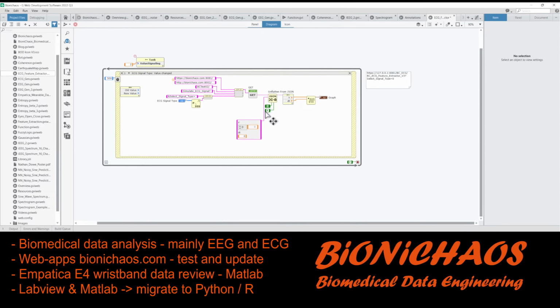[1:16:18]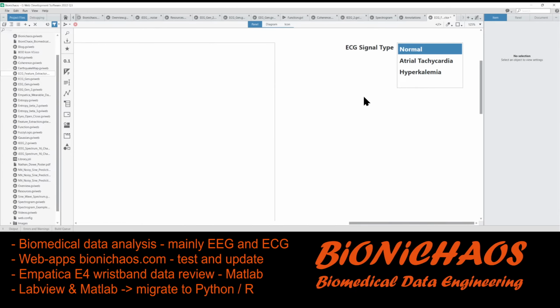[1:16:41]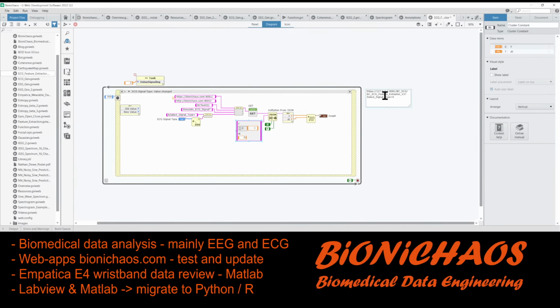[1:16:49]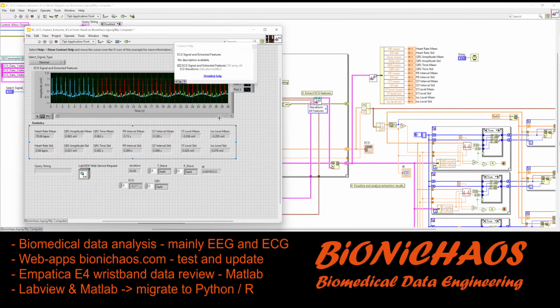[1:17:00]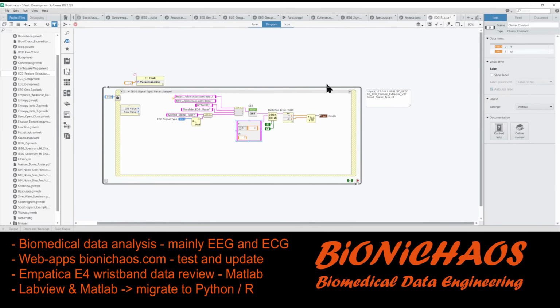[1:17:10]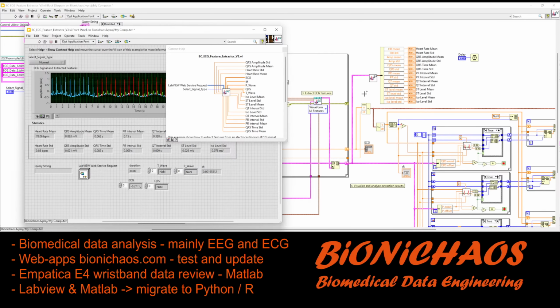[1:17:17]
And yeah, we will have many more things in the output, so 4 different waveforms and more. We have 4 different waveforms coming out of the JSON file. Select the signal type. We have normal, tachycardia, hyperkalemia. And we'll have many more different outputs. Pretty much all of this. We save this as, no, can't add it as an image, can we? It's unfortunate.
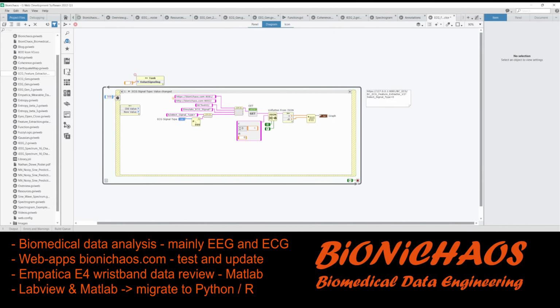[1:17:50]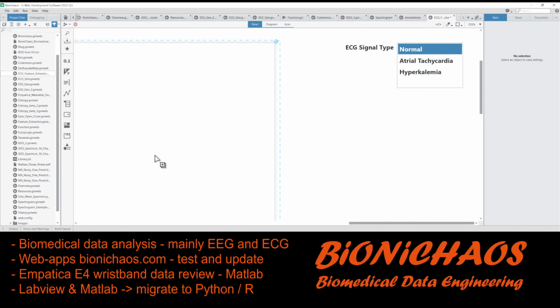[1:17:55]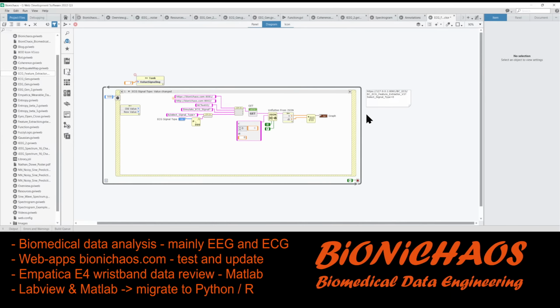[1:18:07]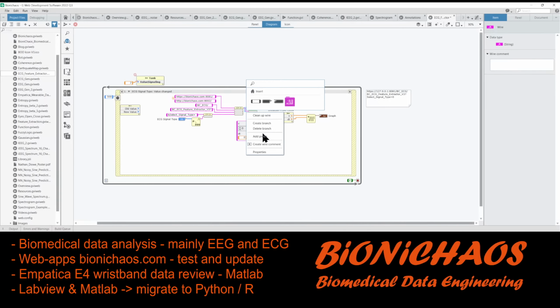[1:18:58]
Wait, just put it on another screen. One sec. Back to this. Okay, need to change the name. It's called the, where is it? ECG. And then we have the name of the API. Oh, is it V3? Yeah, must be. It goes here. We do need the question mark there. Just check the output of this. Will give us an error for now.
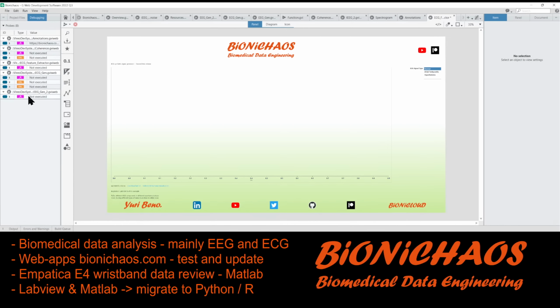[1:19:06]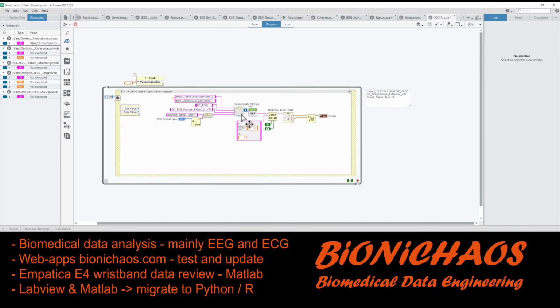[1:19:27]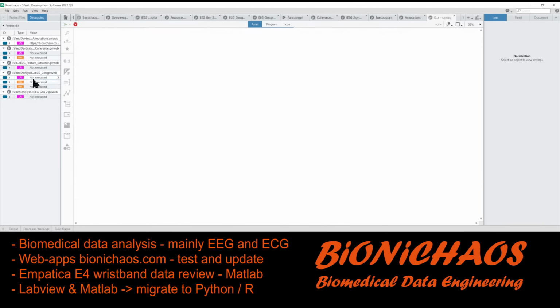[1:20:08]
Debugging. What? No. Wait a second. What terminal is on what? All right, the tank. Okay, ECG signal type. Create reference. Pop that reference in here, so the default value will be 0. It's the normal ECG. Right, now it's executable.
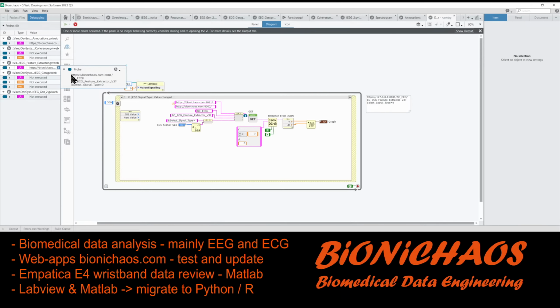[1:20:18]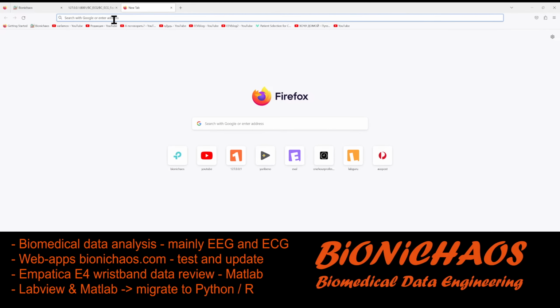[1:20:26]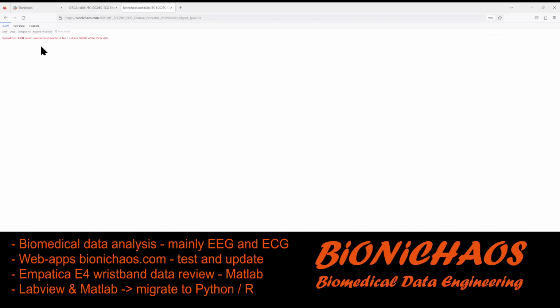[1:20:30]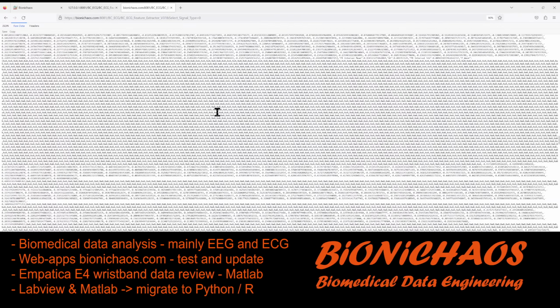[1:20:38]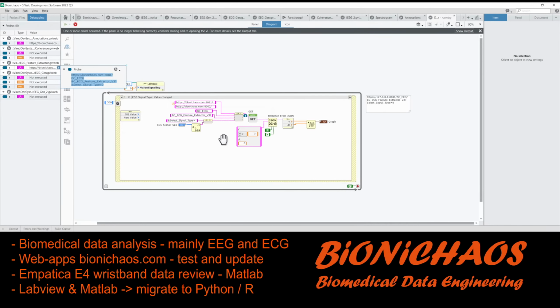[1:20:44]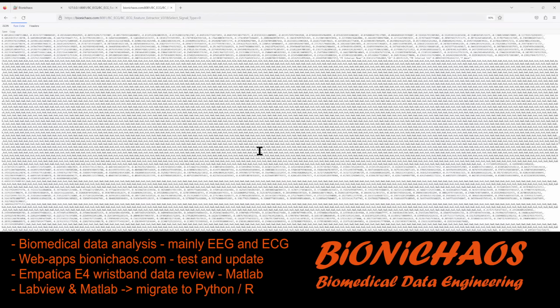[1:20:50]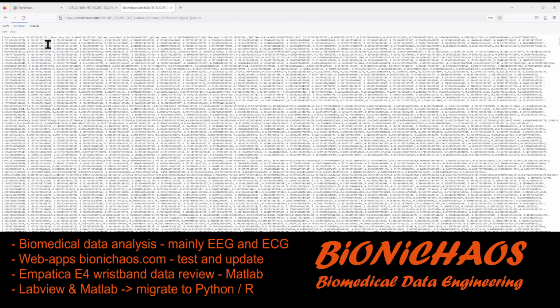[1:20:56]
Right. So just make sure that this API call is correct. Pop it in any browser. Yeah, it is correct. This error, you can ignore it. It's to do with the NaNs in the signal. I'll be able to sort them out. That's okay. And then we have a bunch of things in the output. Pretty much anything with a curly bracket. Yeah, it's essentially all these bits.
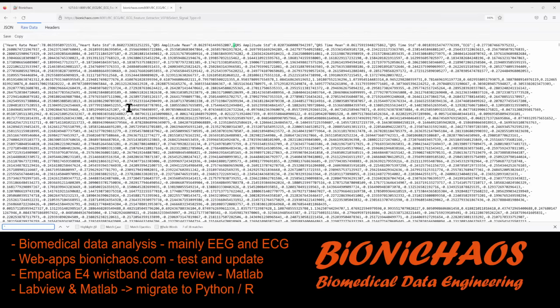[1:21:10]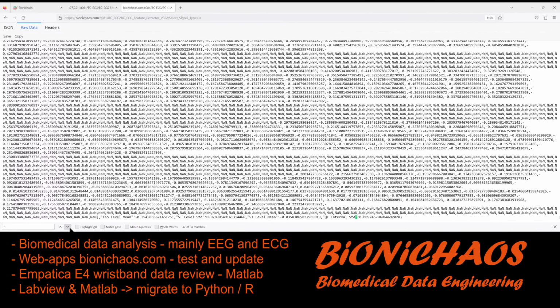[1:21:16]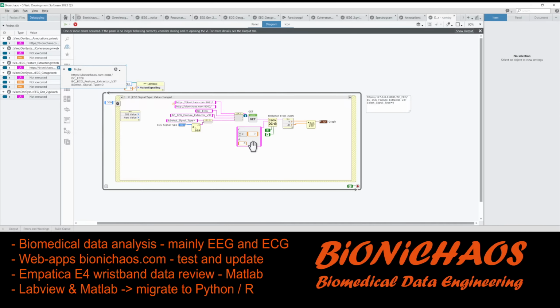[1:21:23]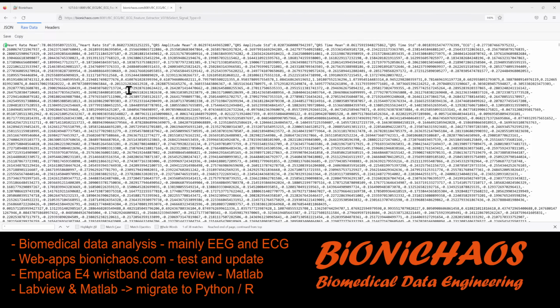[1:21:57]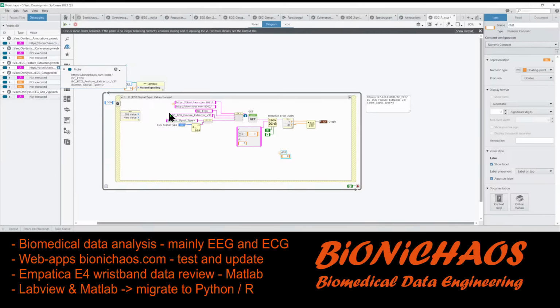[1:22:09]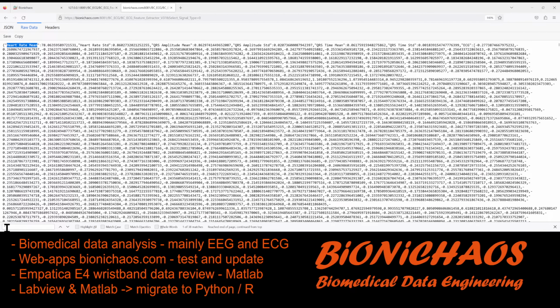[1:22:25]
So you have a heart rate mean. So this will be a regular, it's just an integer. We need the name, show label. Why is the label not showing? Show label. Right, the label is there. Oh, wait, this is a problem, that they have spaces in them. I had trouble with it last time. The API works. Maybe just for the input. I think the input here can't have spaces, but the output is okay to have spaces.
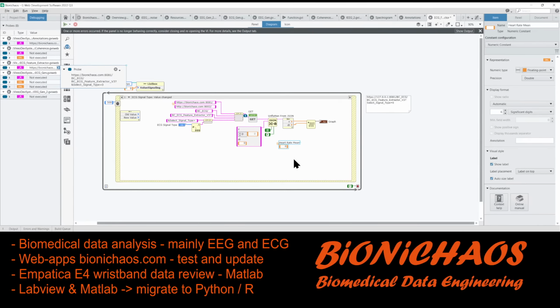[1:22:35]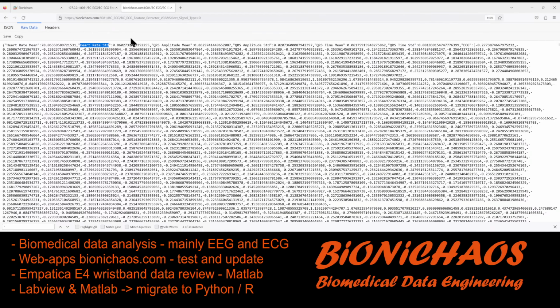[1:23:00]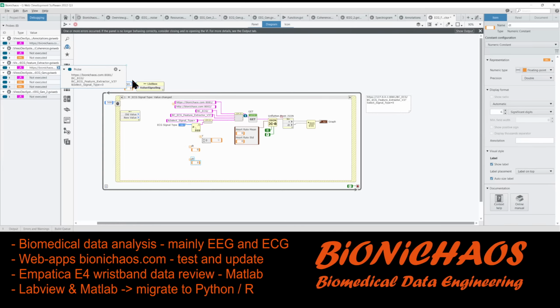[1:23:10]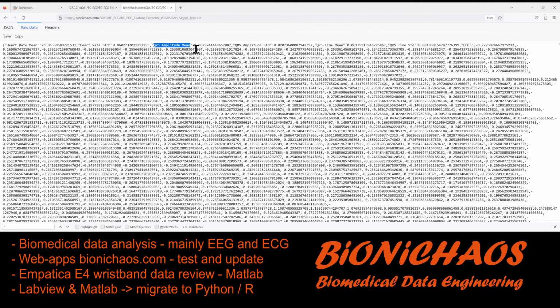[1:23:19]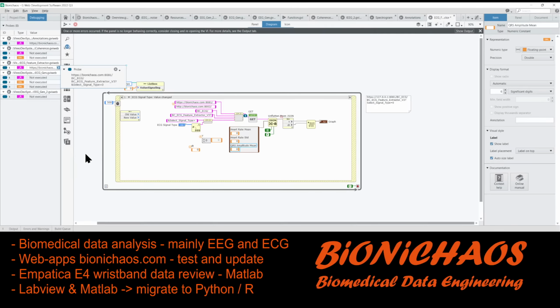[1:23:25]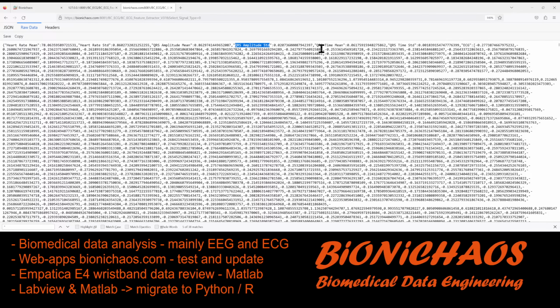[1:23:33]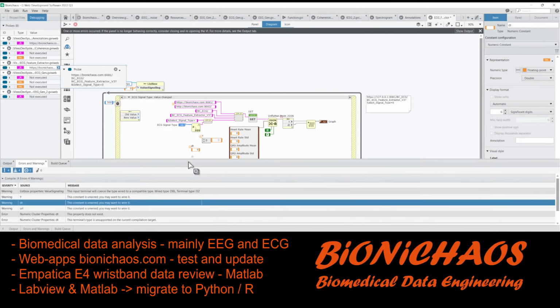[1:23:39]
We have heart rate, standard deviation. Take this one out for a sec. Heart rate, standard deviation. QRS amplitude mean. QRS amplitude standard deviation. QRS time mean. I think if I test it now, it will give me an error. Don't know.
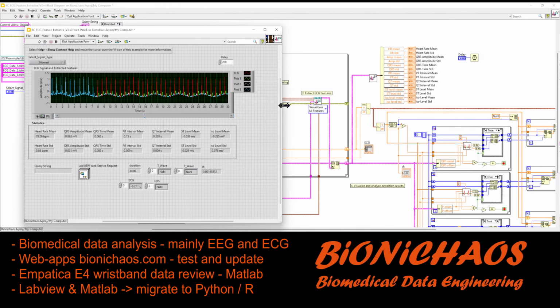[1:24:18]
One second to grab some water.
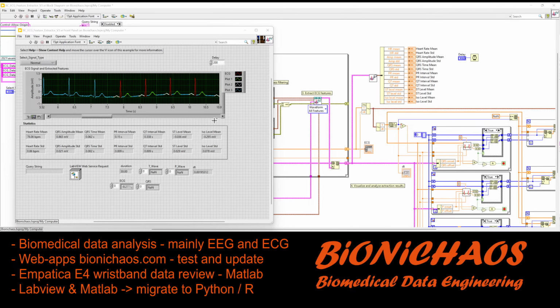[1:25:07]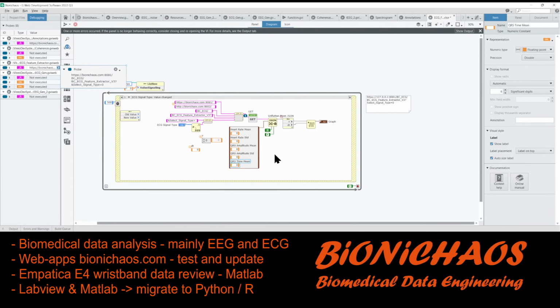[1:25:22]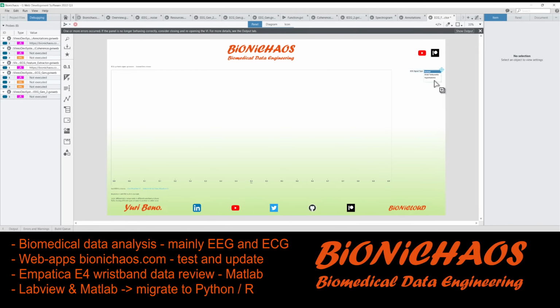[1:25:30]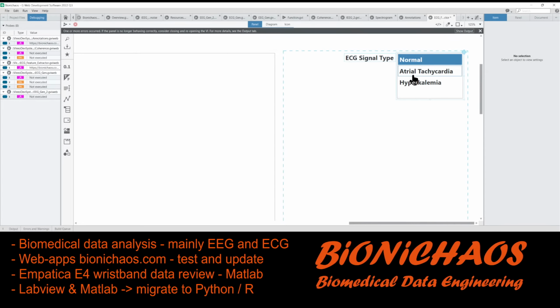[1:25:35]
So we're turning this into an API. It's an ECG feature extractor that will label T-wave, QRS complex, and P-wave. I'm still learning how it all works, but there's nothing better than just creating a tool out of it. So we made quite a few changes to the original example. And I think we're already halfway through making this API call. So the call is just the signal type as an input, and it's simply one of these three ECG waveforms. It's the input to the API.
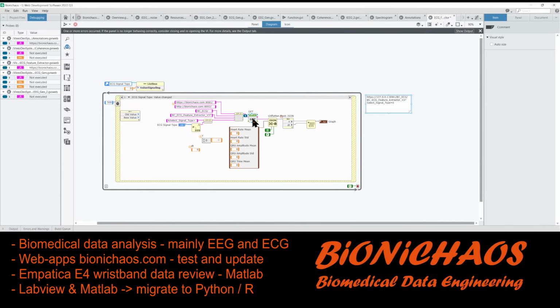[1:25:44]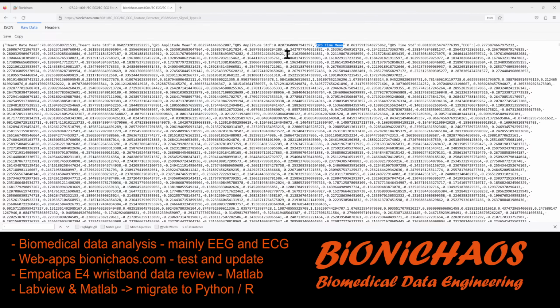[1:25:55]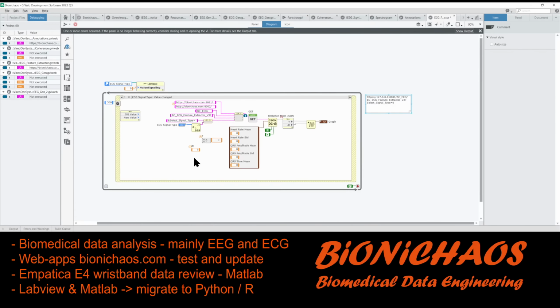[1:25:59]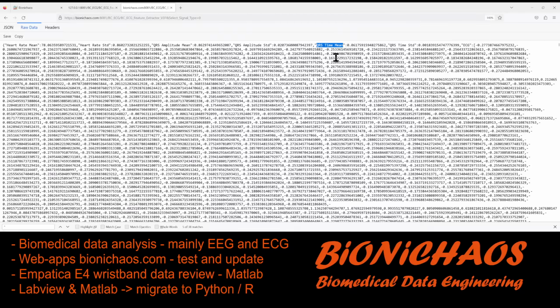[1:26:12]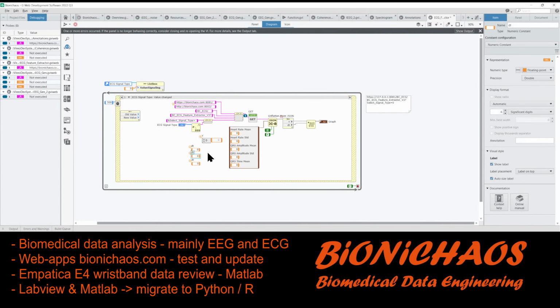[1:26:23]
We're sending a GET request with it. We check that this bit should work, and now we're looking at what's in the JSON file in the output, and we have quite a few things there. So we will stop at QRS time mean. Then we have QRS time standard deviation. So pop this in here, so this function knows what we are picking up out of the JSON file.
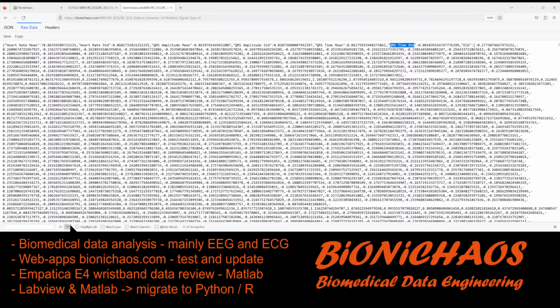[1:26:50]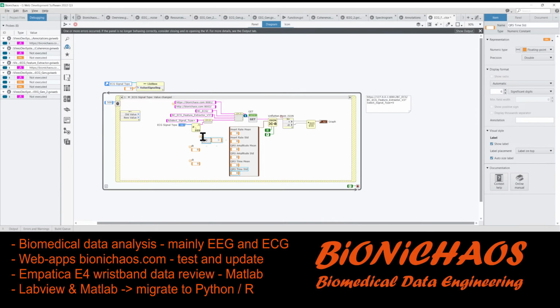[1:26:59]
What's next? Right, and now we have the ECG waveform. So this will be an array, obviously. Well, not obviously. Nothing is obvious these days, is it?
So I have to sneeze. I'll turn off my microphone first. And it went away, as it always does.
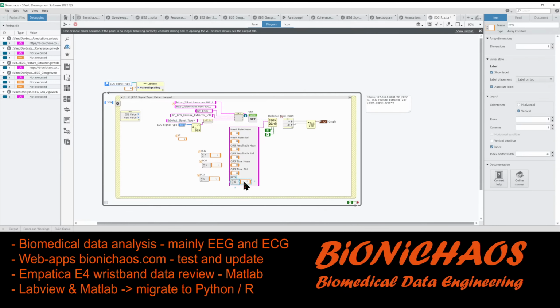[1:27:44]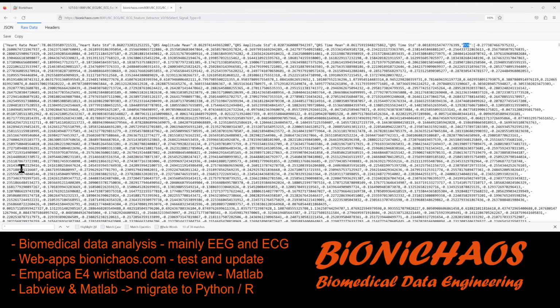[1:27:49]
We should have 4 of these waveforms. Might make more space as well. Right, so we have the ECG. Can pop it in here. We should also have, where are we?
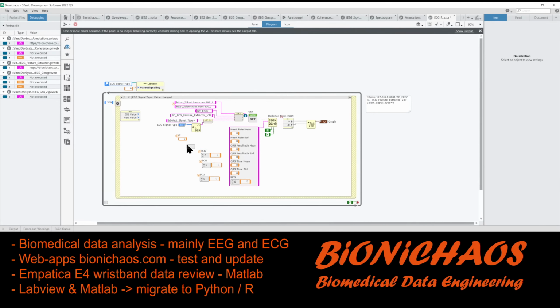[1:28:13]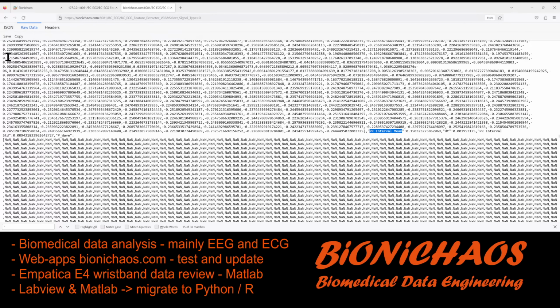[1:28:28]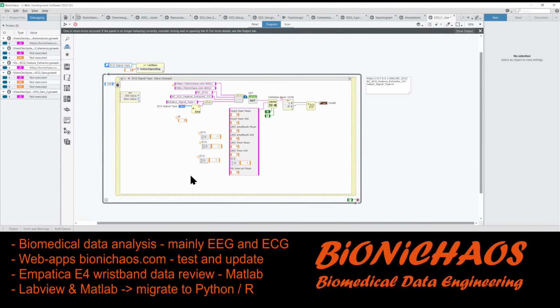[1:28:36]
We have some more integer types, more information. So PR interval mean, and we can create another one of those. Pop it straight in there. Come on. No, it's just the keyboard shortcuts do not always work. We have DT, yes, as expected. So pop DT in there.
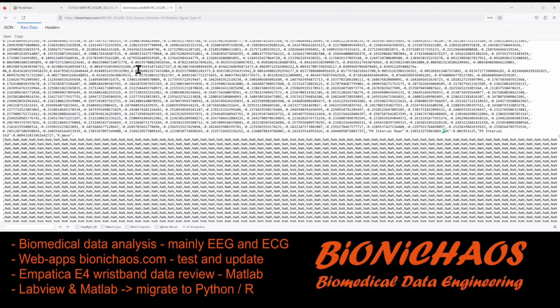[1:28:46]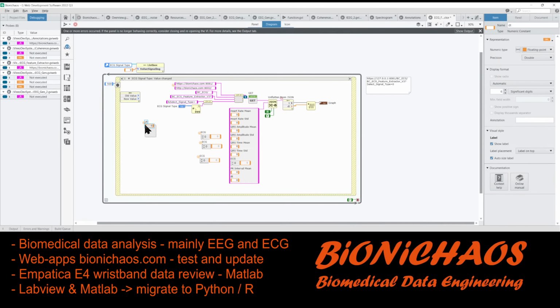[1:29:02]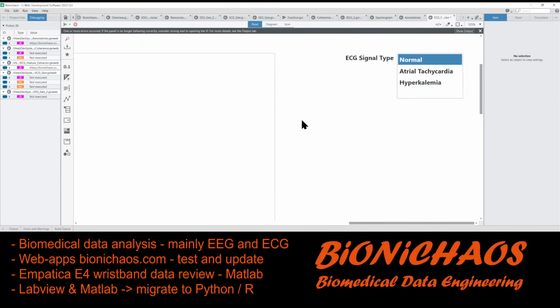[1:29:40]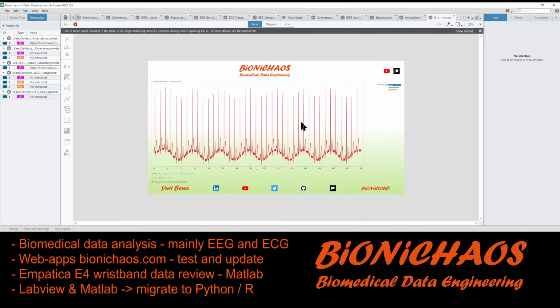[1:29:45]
We have PR interval standard deviation. Make another variable with that name. Pop it in this. It's called cluster constant, which is the input to our JSON function, which would not work unless it knows what's inside it. And then just to test it, we need ECG and delta T, and this should already work. Right, it does. That's great.
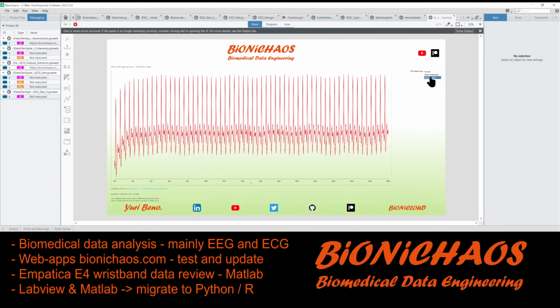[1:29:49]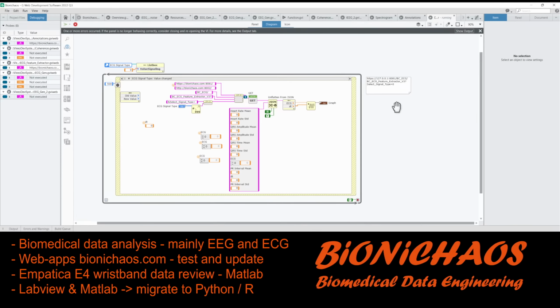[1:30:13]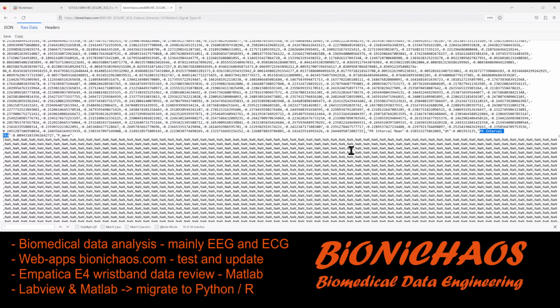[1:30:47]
Yeah, so this is the whole ECG signal, not labeled, without the features. It's 30 seconds of it. Where is it from? Some random recording. It's good that we know the API is working. We can get rid of this because we don't make regular HTTP calls. The API is now secure. So it's using a different port, which by the way you can also use. If you don't like my user interfaces, you can make your own if you wish. More than welcome to.
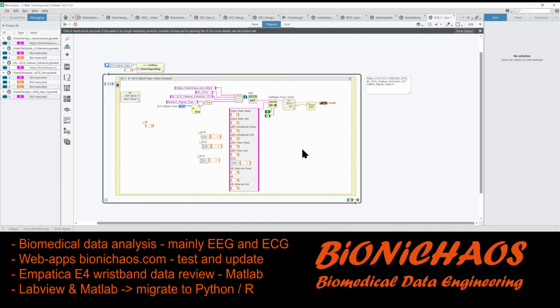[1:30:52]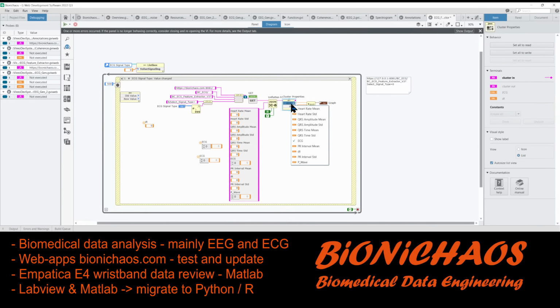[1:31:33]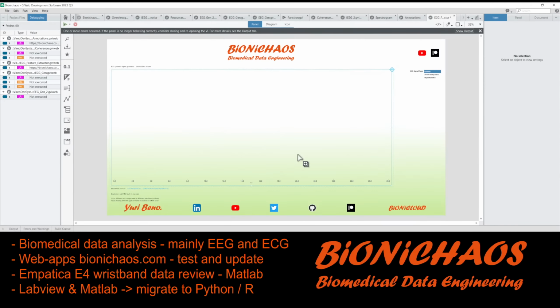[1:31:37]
Put it in a different screen, sorry. Just so I don't have to, Alt tab doesn't really work. So we have PR interval standard deviation, and now we have a P wave, which is an array, and this one has NaNs in it, so non-available entries. So it would be interesting to see. If it did something like this, P wave, right? So that works. So that will be just the P waves.
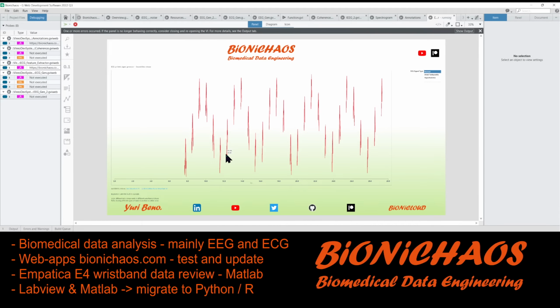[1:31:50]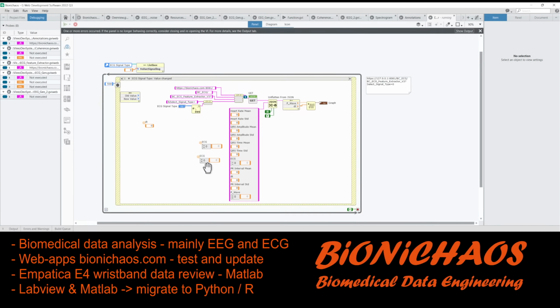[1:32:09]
So much DC on this signal. Should probably remove this first, just to filter it out. So eventually we'll have to put them all together. So what else do we have? We have QT interval mean, which is another integer variable. I don't know why they're not in order. It shouldn't matter, but just keep it in the same order as the JSON file.
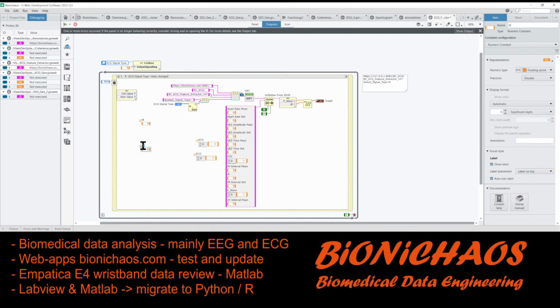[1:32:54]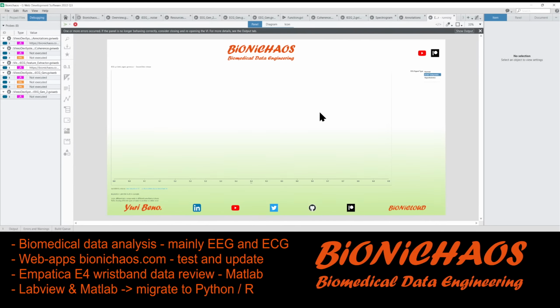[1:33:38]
Then we have another integer variable. It's the isoelectric level standard deviation. It's straight in there. Now we have the QRS, which is an array again. And this should work just fine. Oops. No, we don't want to do that. We want to take the whole thing, not just one item out of it. Let's just check it. QRS. Right, so this will be just the Q and the R peaks.
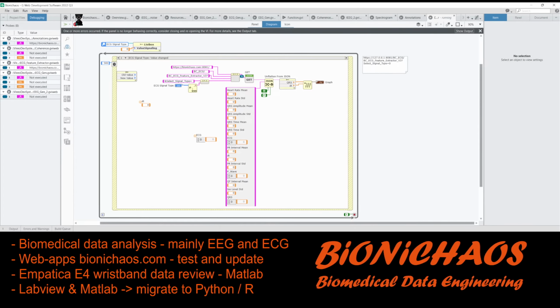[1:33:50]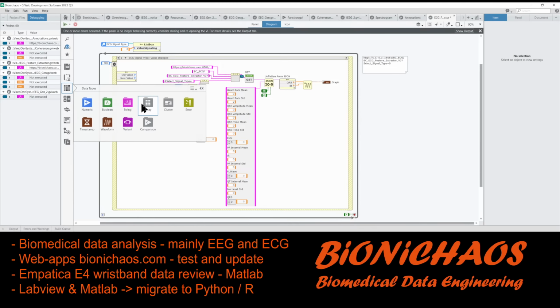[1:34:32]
And eventually we want to combine waveforms. How do we do that? Oh, we just want to overlay it, do we? We're just creating an array. In an array function. Build array. Let's say, oops, no, just on this one. And same delta t. Clean this up. Then we have a QRS and P wave. Then we put a P wave in there.
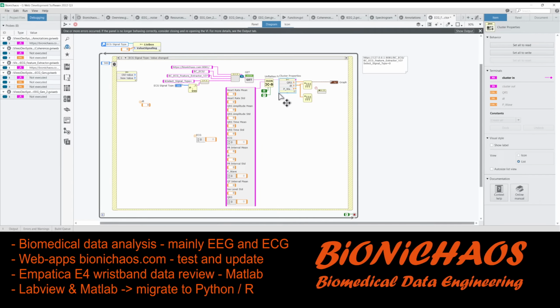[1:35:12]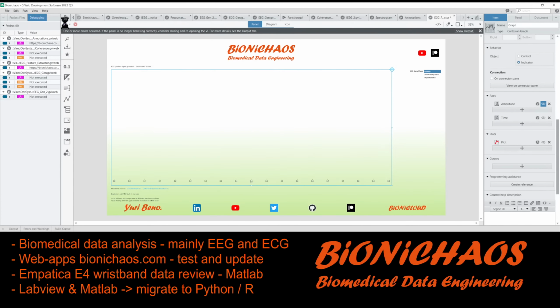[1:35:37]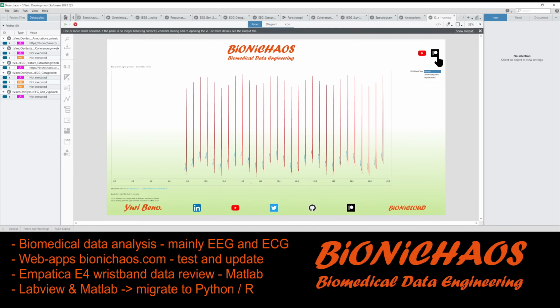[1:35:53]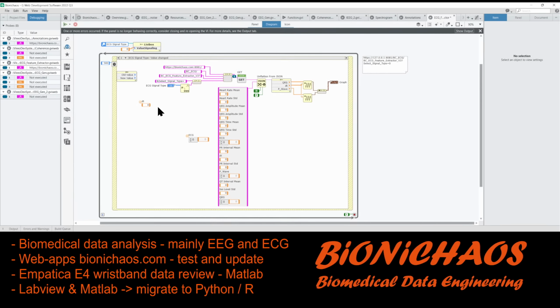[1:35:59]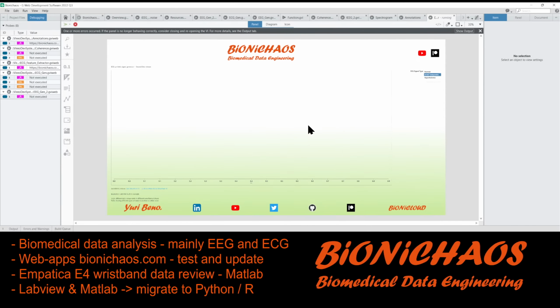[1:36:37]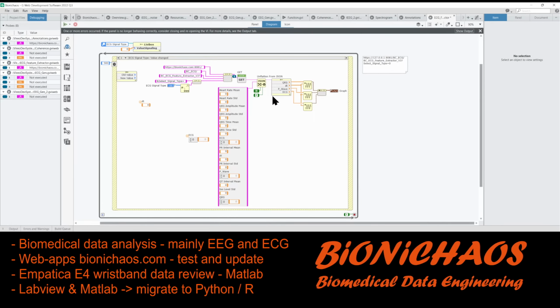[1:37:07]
Just come on, make it. P wave. This should have multiple waves. Yes, it does. This is awesome. Yeah, I'll have to change the colors in there, and the order would be important. We haven't finished when you have ECG. They all have the same delta t, or at least they should have the same delta t. So it's just overlaid over the original ECG, which I probably want in some sort of grayed out color. Actually, probably like this. Ba-bum, ba-bum. I need to be able to select the window size and scroll through it.
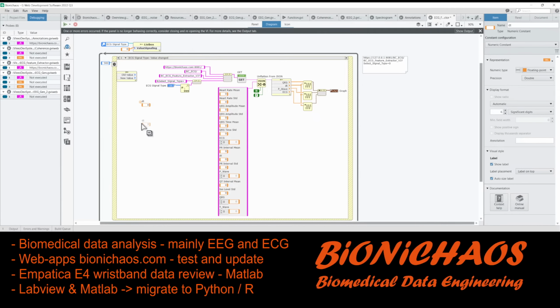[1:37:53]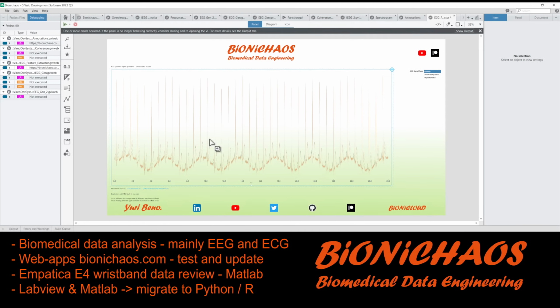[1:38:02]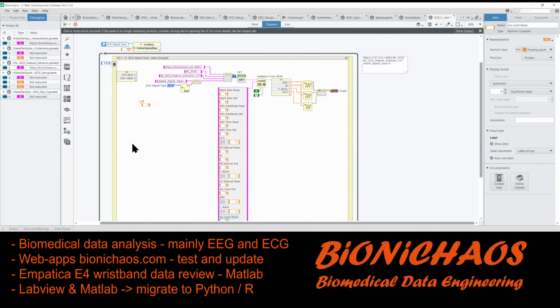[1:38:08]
Anyway, we also have the T wave. Need to get the names right. This will be the last fourth waveform. And we have some other stuff. So isoelectric level mean value. The problem with this is that the measurements are for the entire 30 seconds. So I'm thinking when you select your window size, the measurement values will be just for that window, not the whole wave. We'll see, that will be an upgrade later. Maybe later. Everything is maybe later, isn't it?
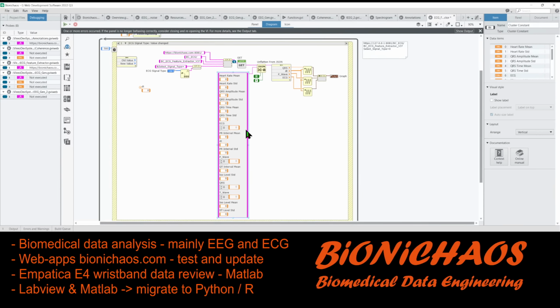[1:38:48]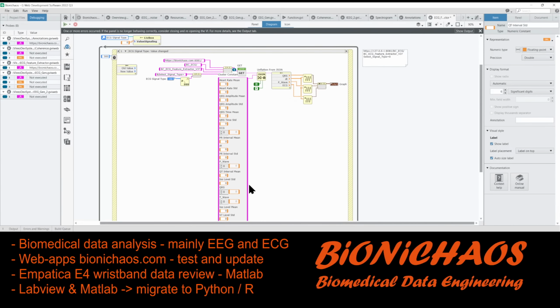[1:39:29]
Another one. I think super long, but that's okay. We can eventually pin it down. Where the dock to node. Yeah, so it's just hidden there. Oh no. We'll display the whole thing just so we see what we are dealing with. We have 2 more to go, so it should be quick. Bear with me. And the last one, the QT interval standard deviation. That should be it.
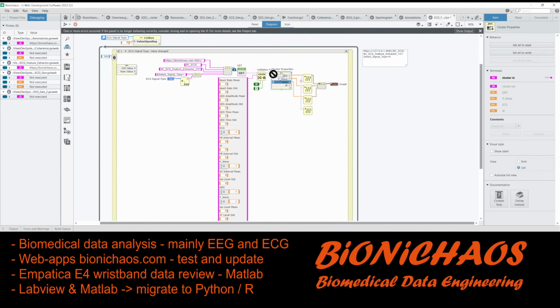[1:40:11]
Now we have 4 waveforms, we said, right? Let's put delta t. Can we just move it? Oops. What is that? Yeah, before when I tried doing something like that, it would have crashed on me. Just disconnect that for a sec. Connect all the delta t's together. We'll have the whole ECG. Then you have your T wave. Then you have your QRS, then P. Then you have your delta T. Delta T should be wired to this. So the delta T should be the same.
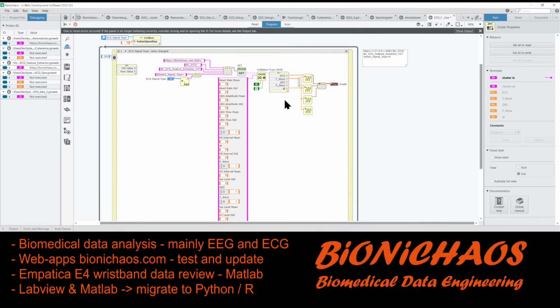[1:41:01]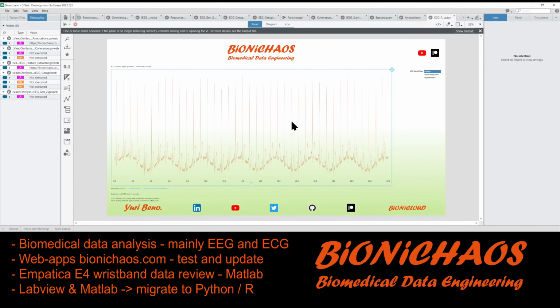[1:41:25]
And then just remove. So the whole ECG can go first. Then we have, move it a bit, tilted T wave, QRS, and P wave. Easy. Let's save these. We haven't saved anything for a while. Let's run, see if it works. So why? Yeah, the first one comes up in red. We'll make it some sort of transparent. We'll put it last.
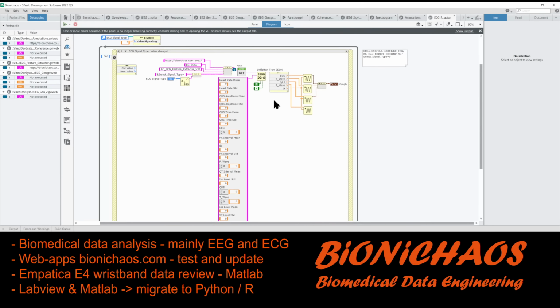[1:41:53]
Oop. It will change. Oh, come on. Don't change the wiring. No. No. This shortcut for the wiring to stay. What if I write this in? No. Still have to rewire. Put ECG last.
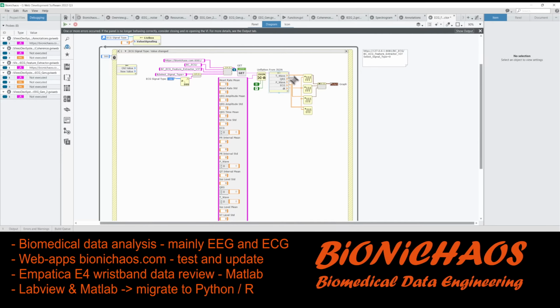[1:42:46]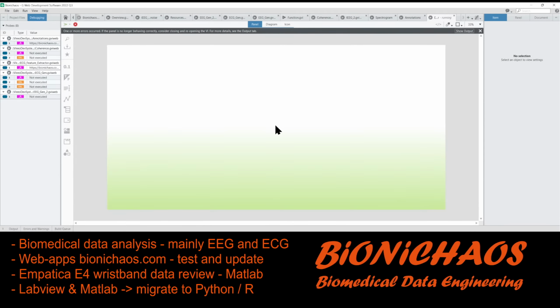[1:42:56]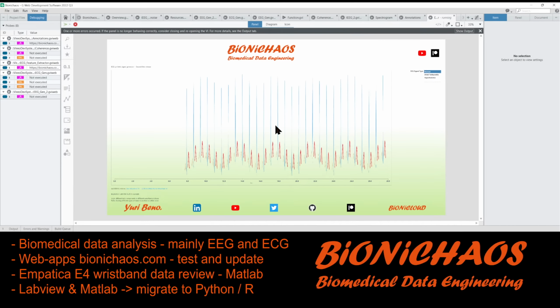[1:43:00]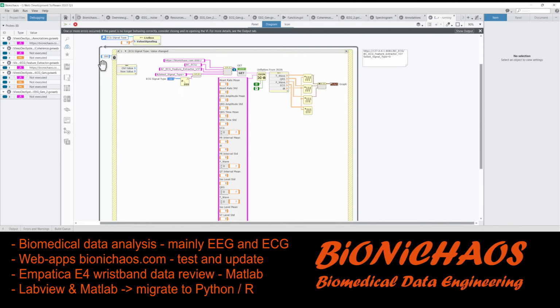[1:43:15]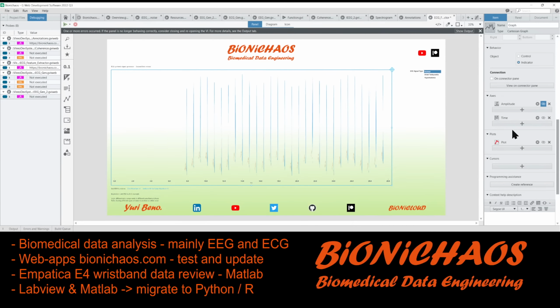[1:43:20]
What? Stuff something up or what? It's like the color of that last thing. It's probably green, same as the background. Let's check the colors. They have red. What? It is greenish, so it's just disappearing in the background.
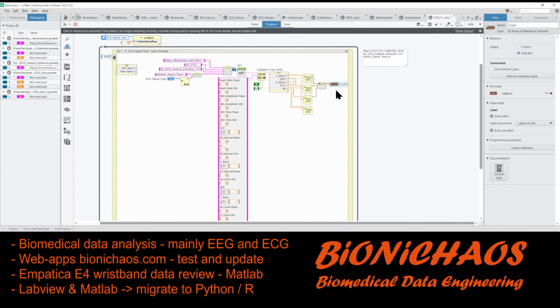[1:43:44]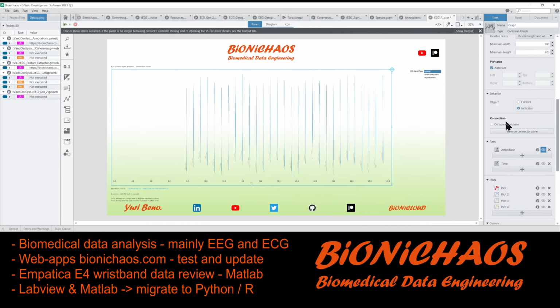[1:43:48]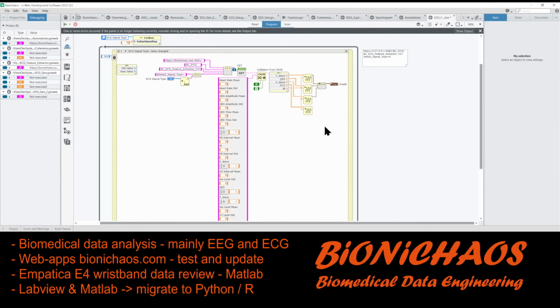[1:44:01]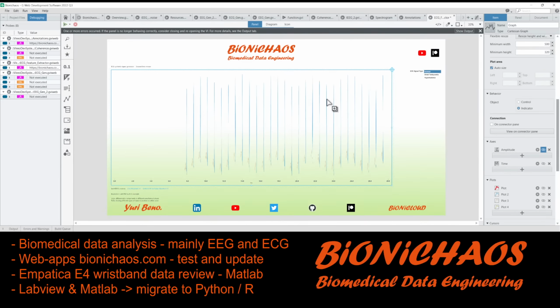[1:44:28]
What's the first one? Keep the names. But I don't have the names there. Array, waveform. Don't have the names. Some cleaning up. Do it. Oh, this is not good. Got to add that. Should be better, isn't it? Right. So now I can see the green. The green, the last one is the whole.
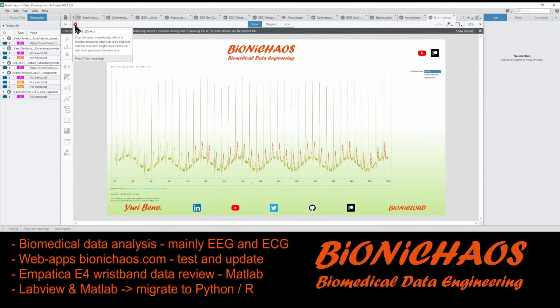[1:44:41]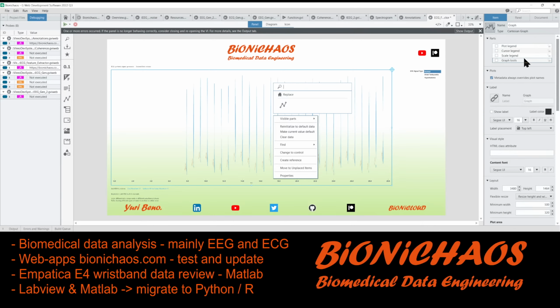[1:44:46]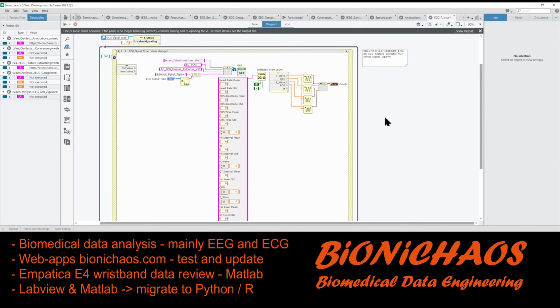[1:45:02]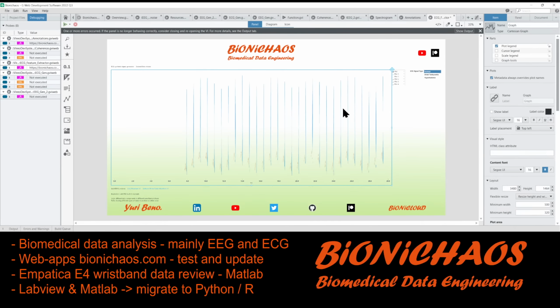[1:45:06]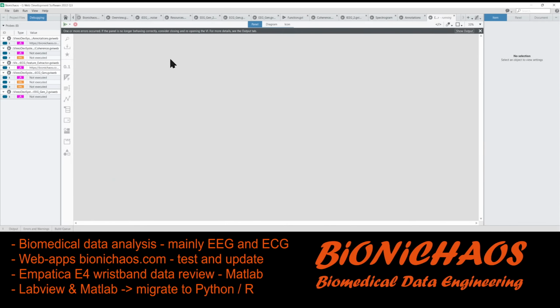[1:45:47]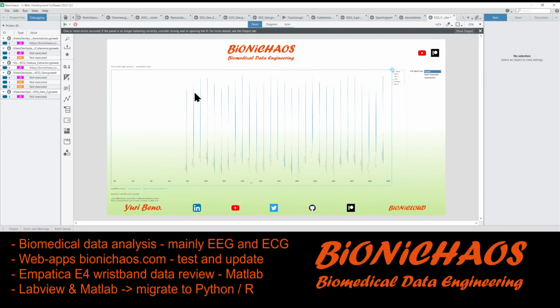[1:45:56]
Let's display plot legend. We have T wave. We have QRS. P wave. And we have all ECG, just ECG. Same state. Actually move the mouse for it to take effect. Right.
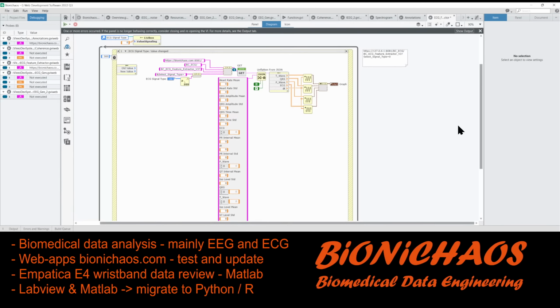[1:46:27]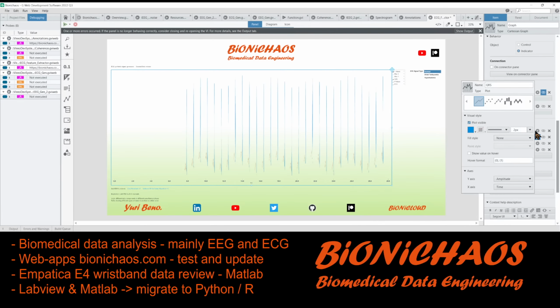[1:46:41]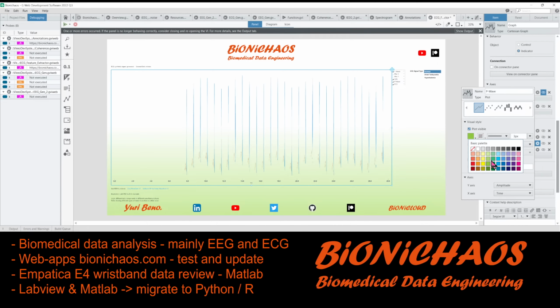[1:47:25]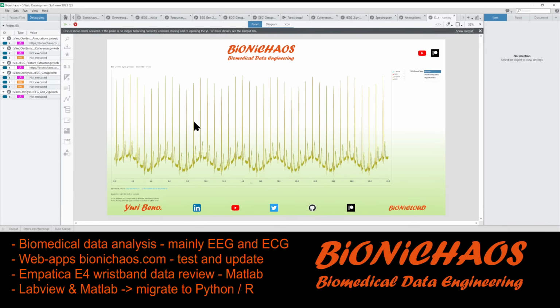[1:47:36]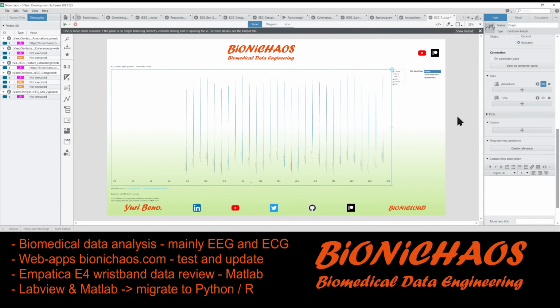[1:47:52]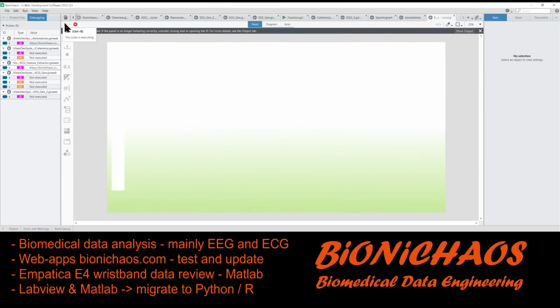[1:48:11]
Move 3 pixel width. We can make QRS red, T wave blue, P wave green. No, wait. We have green as this. Make it right. Yeah, that last one can be semi-transparent. Yeah, that looks okay.
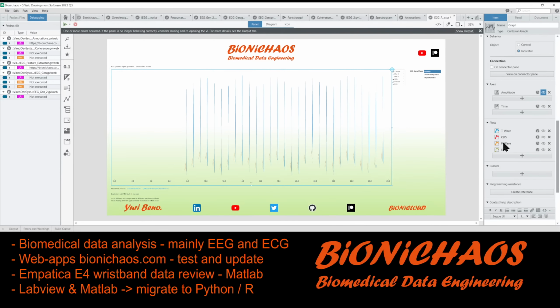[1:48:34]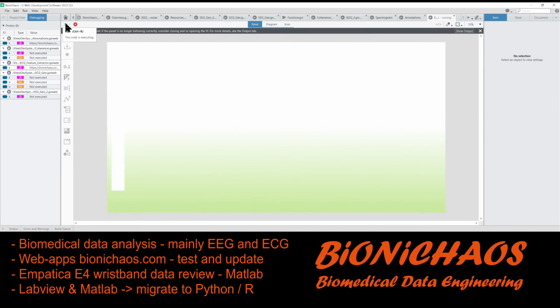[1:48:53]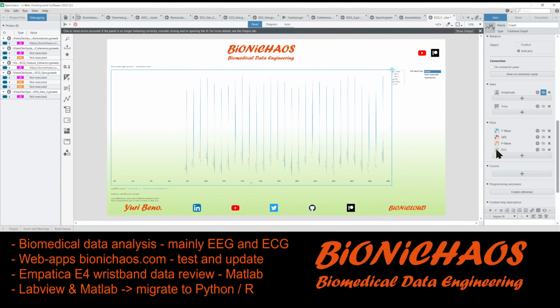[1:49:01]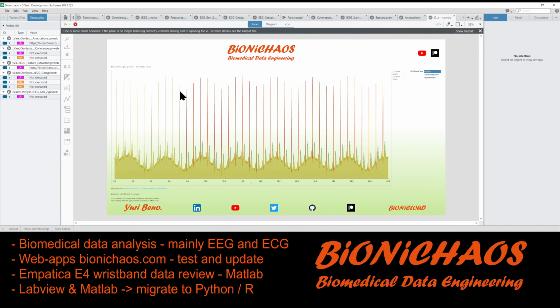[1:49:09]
Don't like the dotted line. It's not great. Reduce it to 1 point. Oh, it's below. Reduce fill to minus infinity. Yeah, it's not normal for ECG to look like that, but I'll wait until someone picks on it. Just leave it like that.
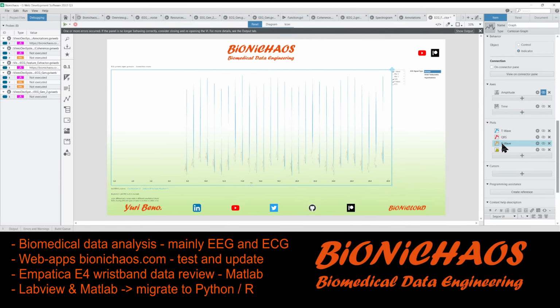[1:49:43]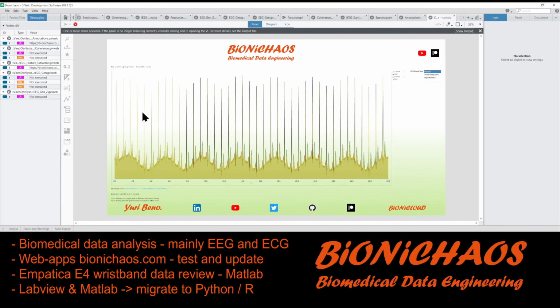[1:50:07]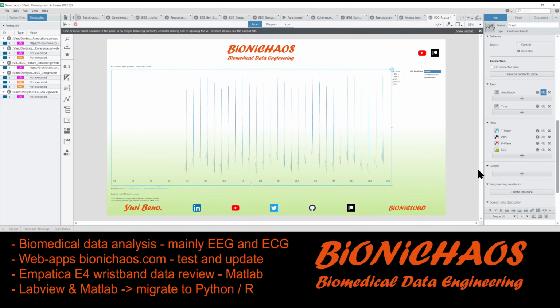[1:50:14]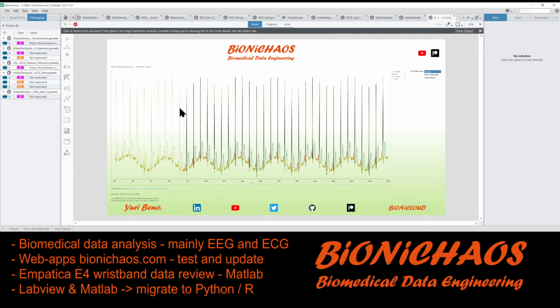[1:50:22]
The only thing I don't like is that orange. The orange color is not great for some reason. That one is red. Oh, and the QRS black. Yeah, the fill. None. Black doesn't really look like it's labeling.
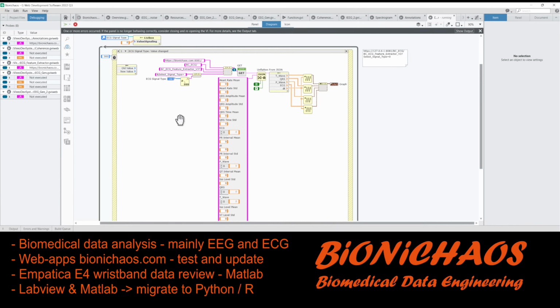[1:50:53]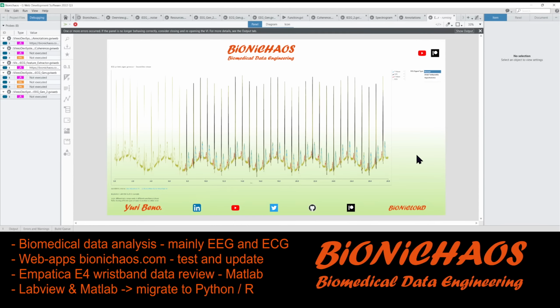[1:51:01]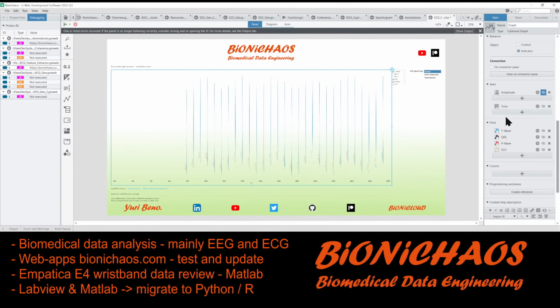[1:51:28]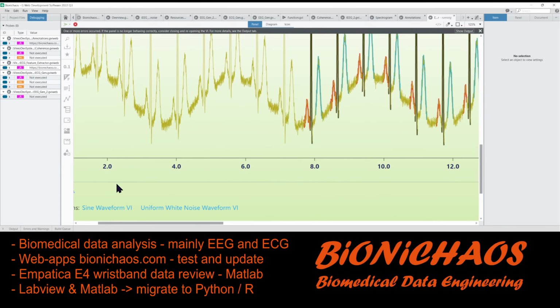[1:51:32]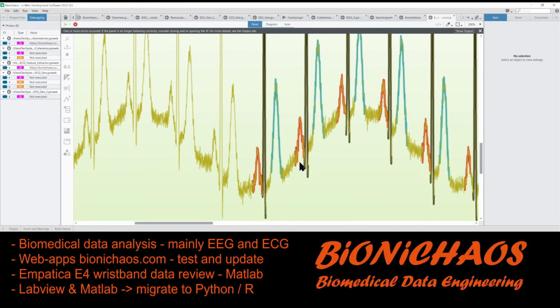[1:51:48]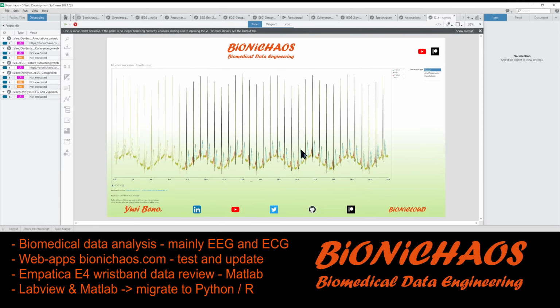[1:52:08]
And how do I change the window size? And we just pop all the measurements on the right here. Just have to be clear that those are not input variables, but output measurements. And yes, we want to change the input size. Yeah, the scroller view. Why is the red meant to do that? It's as if it's transparent or something. Oh, okay. Yeah, just leave it like that for now.
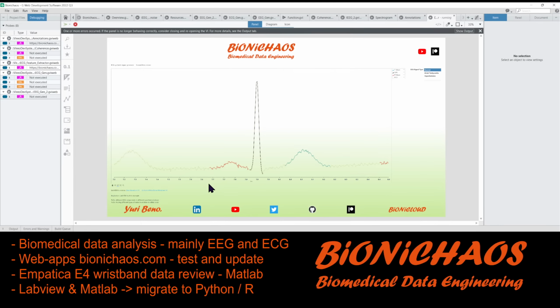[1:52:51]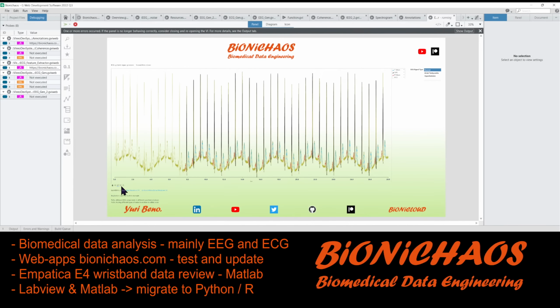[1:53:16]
We're going to have an option to get rid of that low frequency, just a filter at 0.5-something hertz. Yeah, it's a very low frequency noise in it. That's right. Doesn't look like 3 times thicker than the original one. Yeah, those are weird. Those are not the same as what you have in LabVIEW. It is what it is.
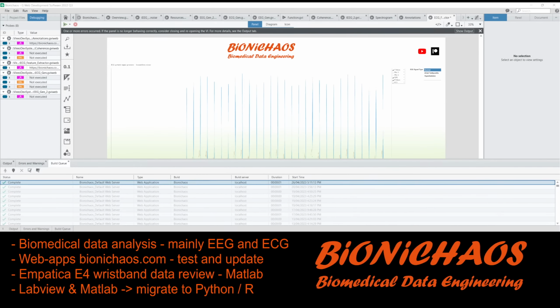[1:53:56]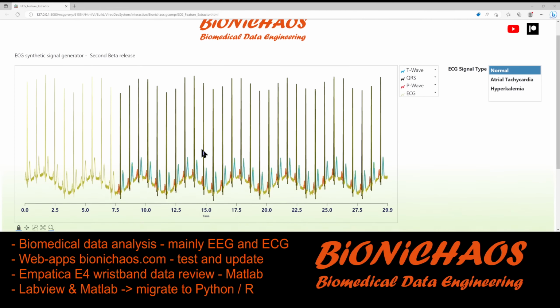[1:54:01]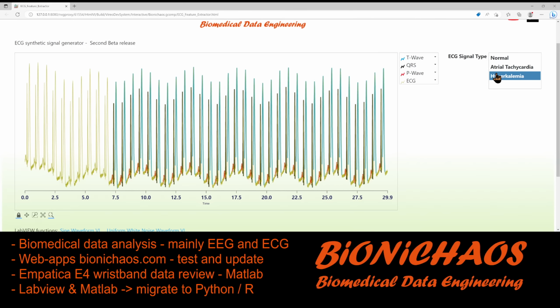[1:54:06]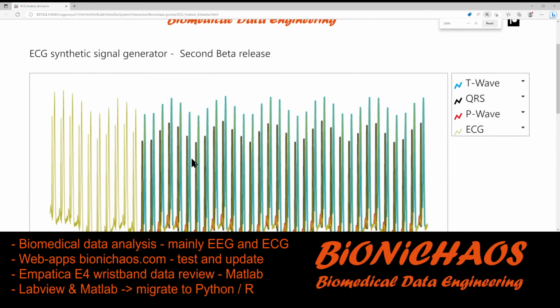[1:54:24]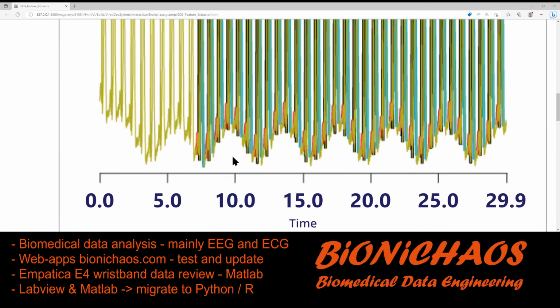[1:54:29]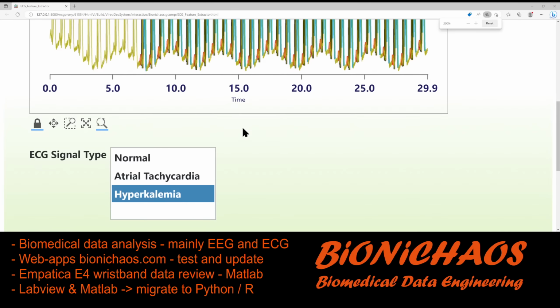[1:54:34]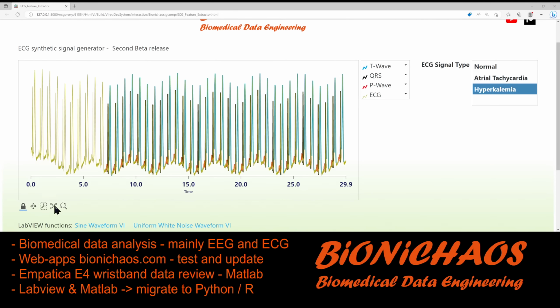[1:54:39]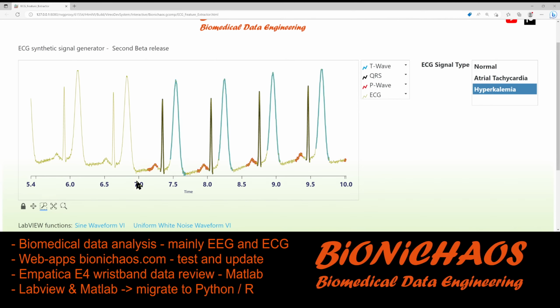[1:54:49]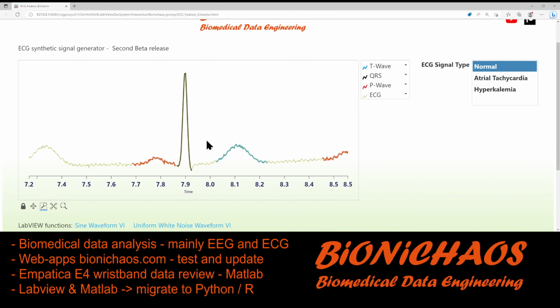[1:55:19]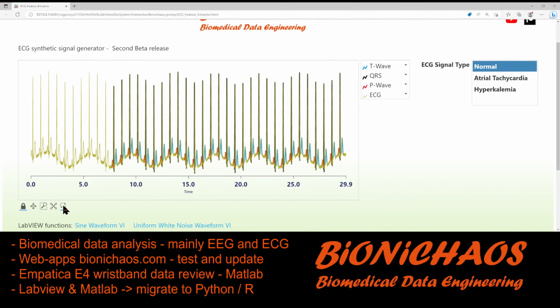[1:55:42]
Let's quickly see how it looks in the browser, because sometimes it can be very different. Wait, made a mistake. Ah, no, that's correct. Yeah, no, it's fine. Yeah, I'm not sure why it looks funny like this. And I expect in different browsers it will look different. Yeah, it's funny. Yeah, the rendering of this thing is not great, but I don't want to mess with this too much.
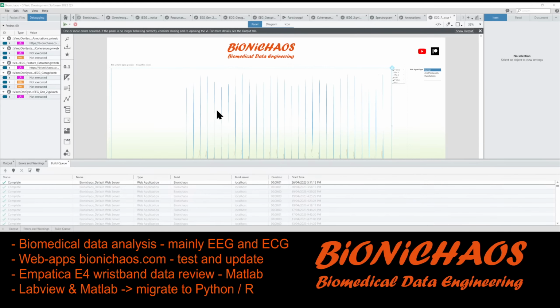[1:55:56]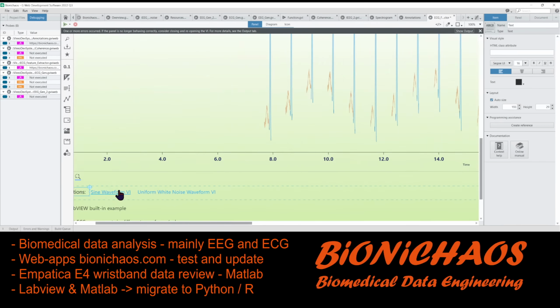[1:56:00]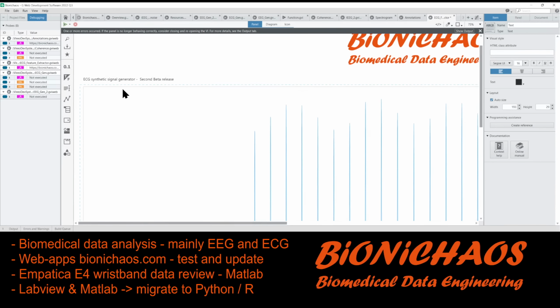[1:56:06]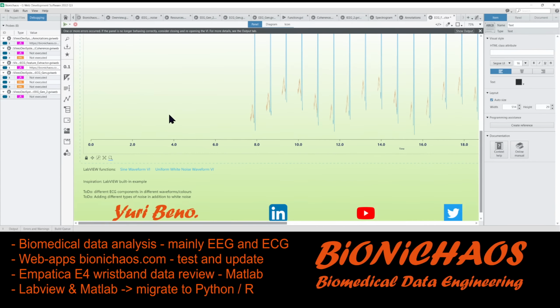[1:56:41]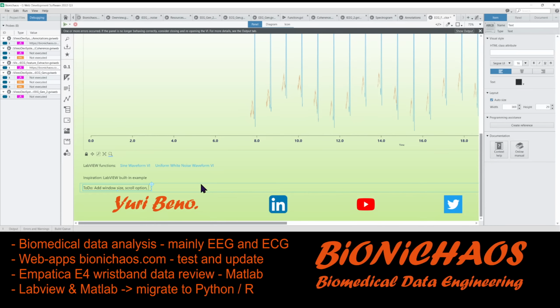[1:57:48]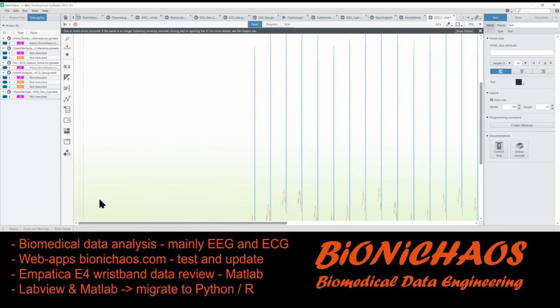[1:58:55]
We need to add the scroll option and a window size scroll option, and the calculations should be made on that specific window size, not the whole. And select that window, not the whole signal. Okay.
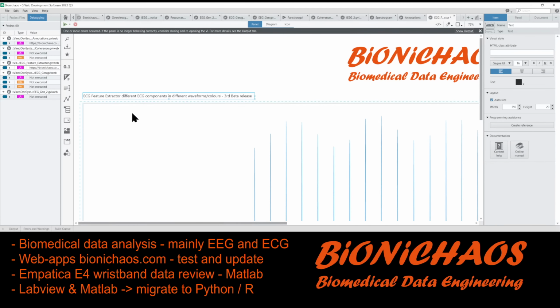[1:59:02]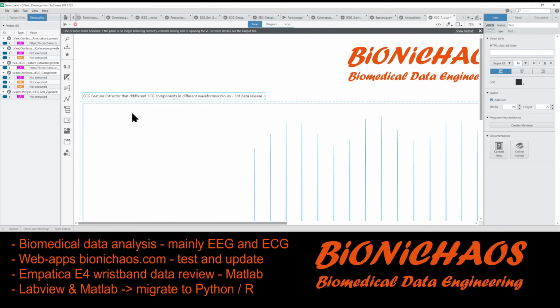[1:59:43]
Extract what is insert, right? With that plots that draws charts, that breaks that labels, and it's equal colors by splitting ECG wave into 4 subwaves. Into T.
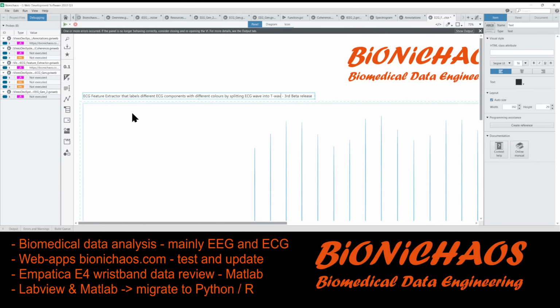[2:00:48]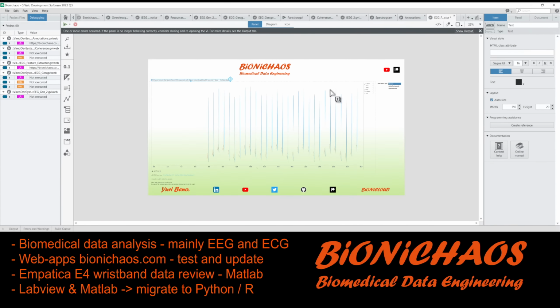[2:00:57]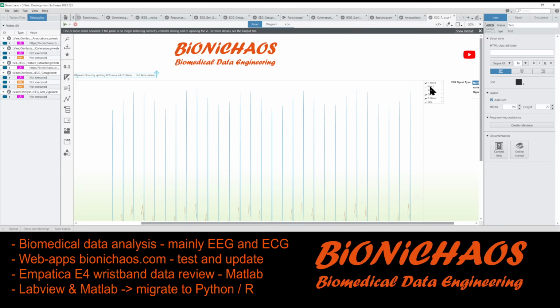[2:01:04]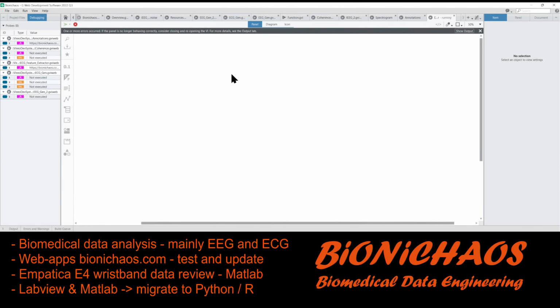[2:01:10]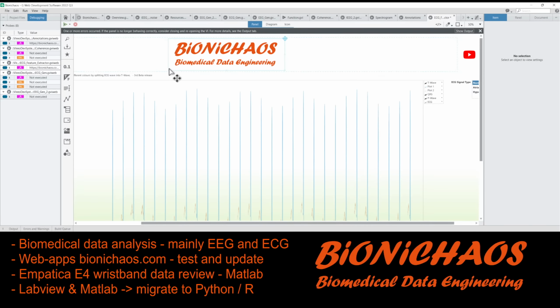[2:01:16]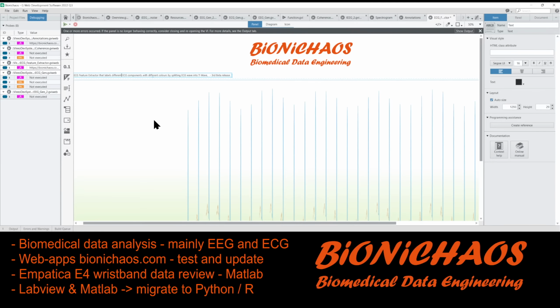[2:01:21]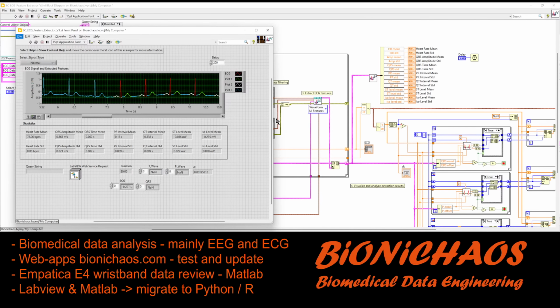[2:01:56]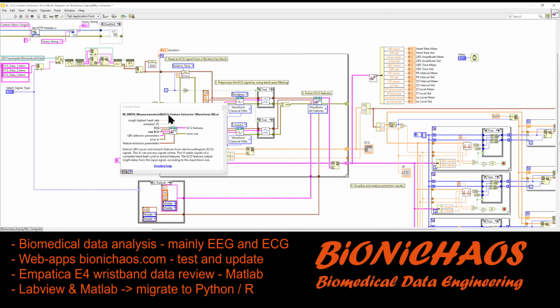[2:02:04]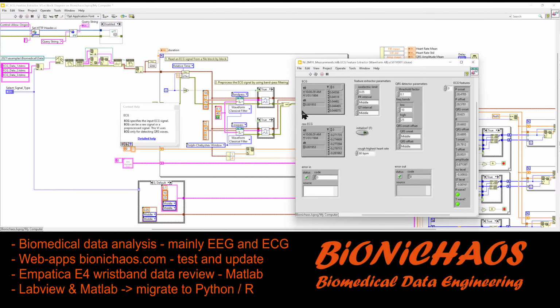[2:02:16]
Why is this stuff still in there? Plot 1 shouldn't be there. It's weird. Looks like some sort of buggy thing. T wave, QRS and P wave. Yeah. What it does is we'll have more background on it using this action. The more info on it.
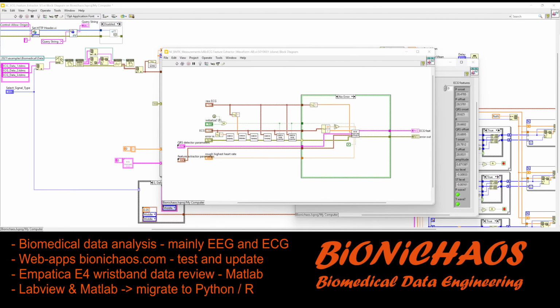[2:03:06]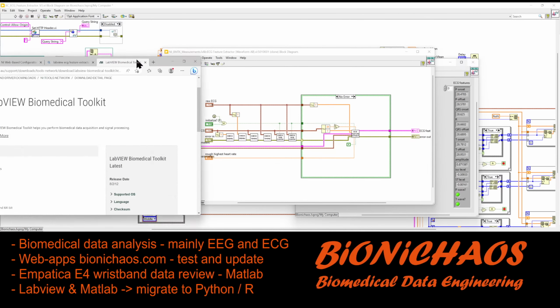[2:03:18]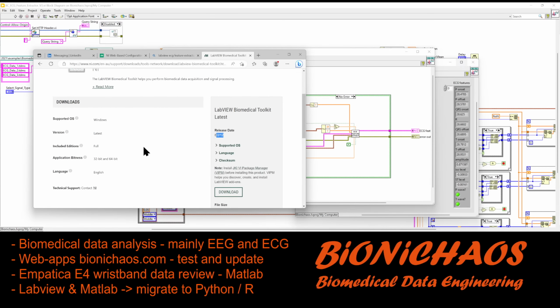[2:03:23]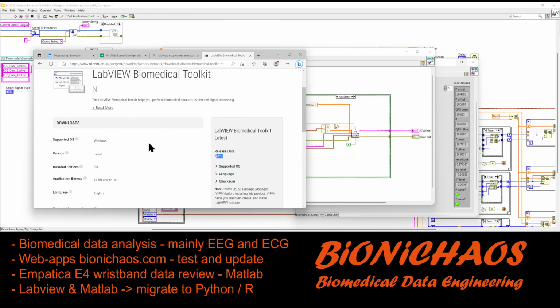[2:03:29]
And LabVIEW, that's super old, probably from 2014 or something. It's almost 10 years ago. ECG extract. And yes, ideally we'll do something similar in Python or MATLAB or R. Probably first MATLAB, then R, and then Python. Yeah, so the LabVIEW biomedical toolkit was first released back in 2012. I don't think it had any updates since. Image extraction.
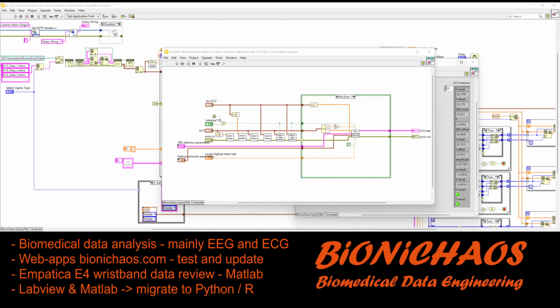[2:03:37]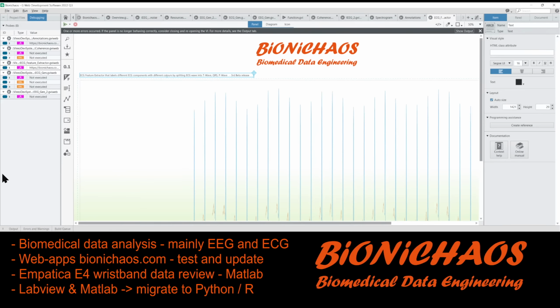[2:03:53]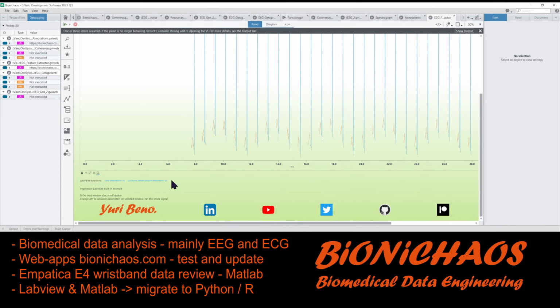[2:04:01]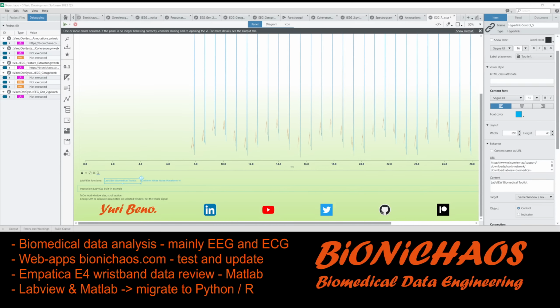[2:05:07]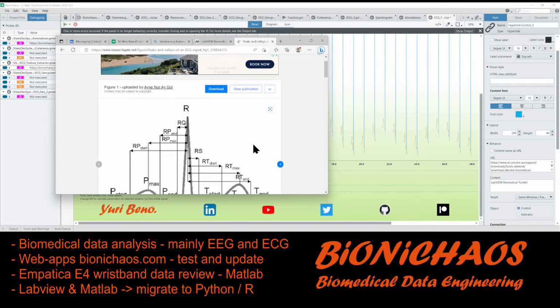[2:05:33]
Yeah, I can put this one in for now. What is it using? LabVIEW functions. Content: LabVIEW biomedical toolkit. This link, but if that link is not working again, there's nothing I can do about it. LabVIEW biomedical toolkit. When someone did something in some paper. There was a paper, wasn't there? There is a paper. Just looking at this paper. Yeah, this is all the measurements that we record.
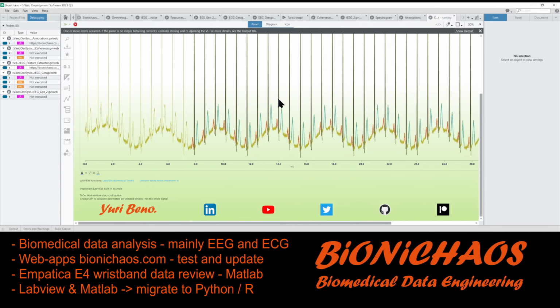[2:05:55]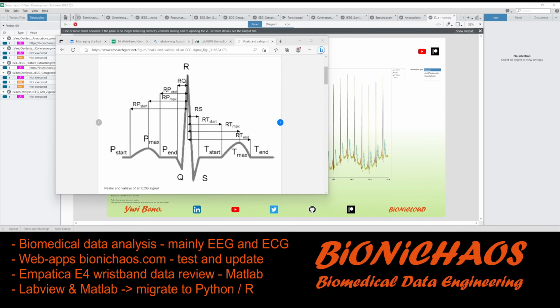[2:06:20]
I might finish it soon and take this offline.
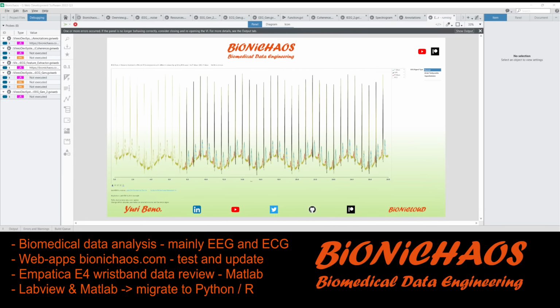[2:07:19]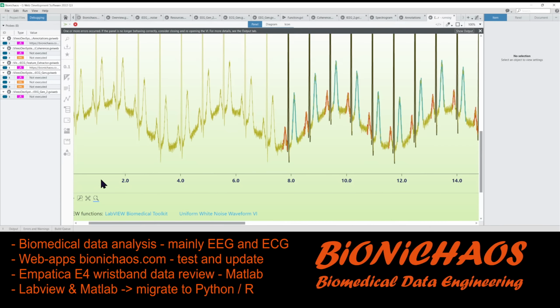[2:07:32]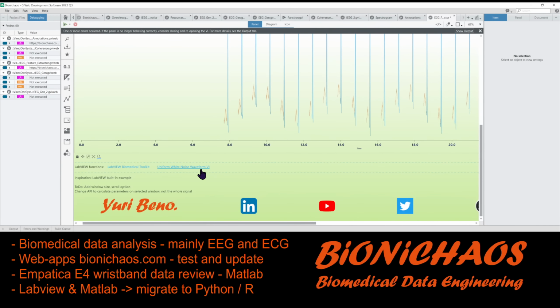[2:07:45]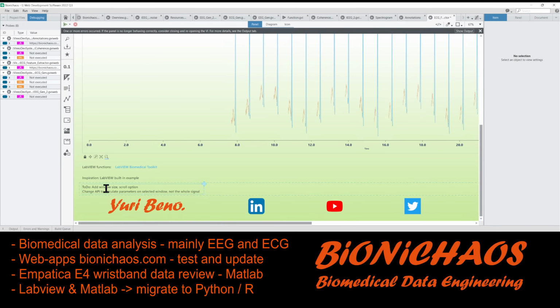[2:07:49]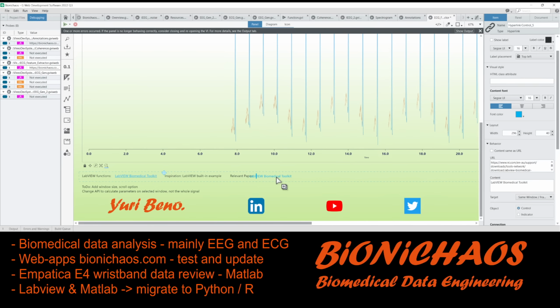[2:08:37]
This paper in as well. It's running. Stop it to be able to edit it. In the example, just put all this in one paper call. Relevant paper. Put another link in there called this, and its link is that.
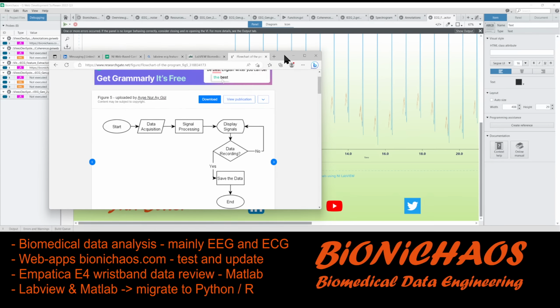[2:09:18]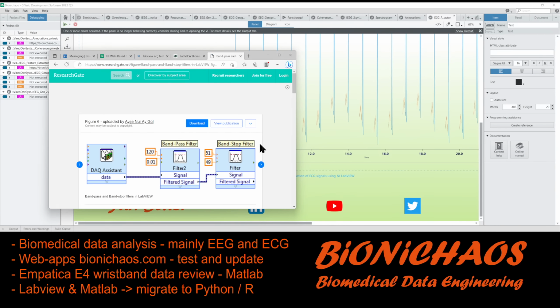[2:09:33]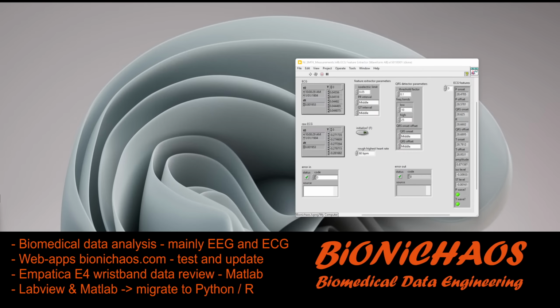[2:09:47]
Put it all in one. Just think it's the data because the signal part. Yes, data recording. Is that one display signal? Yeah. Well, that's kind of obvious. Pretty sure this is the same settings from the original examples. So that's what they are using as well.
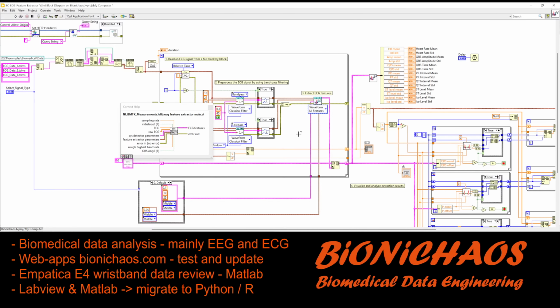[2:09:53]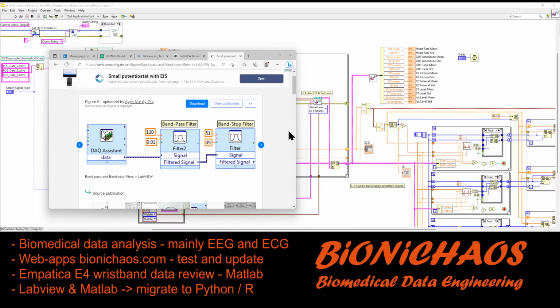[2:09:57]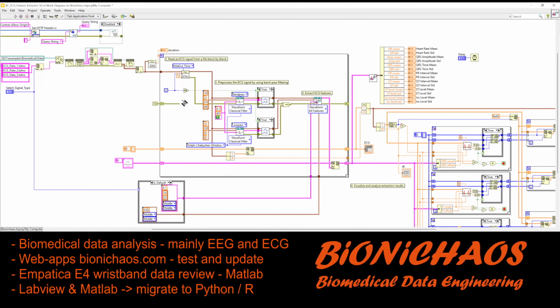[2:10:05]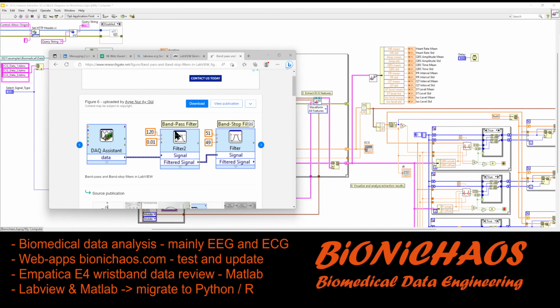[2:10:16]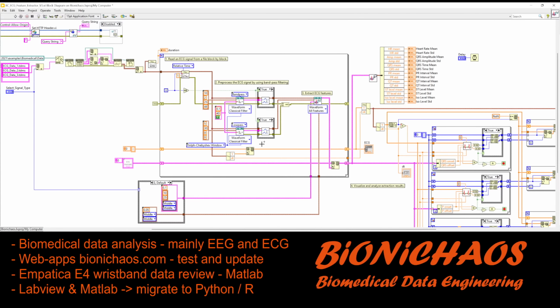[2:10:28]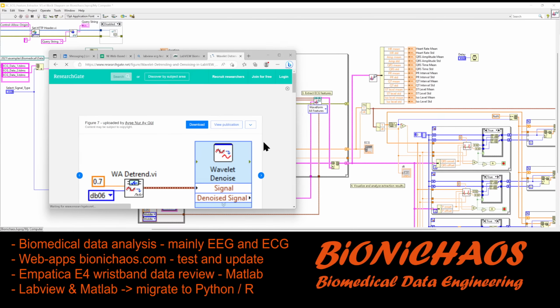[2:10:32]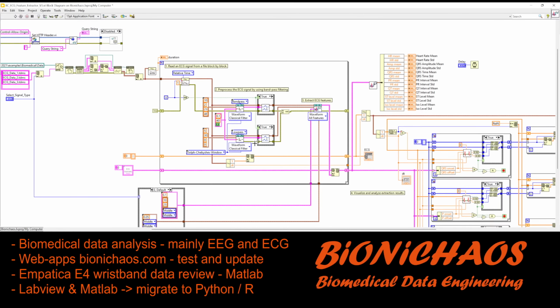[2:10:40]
Look, should I just look for 120? Kind of bandpass filter. They're using different values. They're using DEC. Sorry, touched the microphone. Hopefully it wasn't too bad. Yes, they're recording. They're filtering the data coming out of the digital to analog device. That's okay. Doing denoising. Okay. We could use that as well.
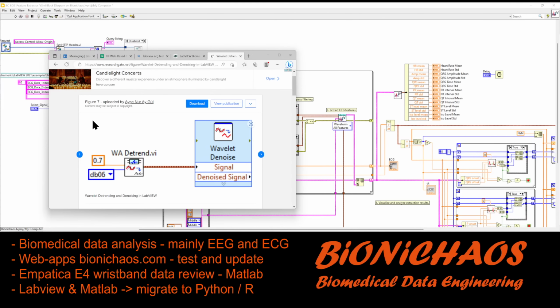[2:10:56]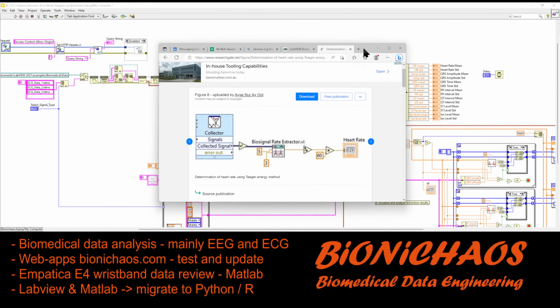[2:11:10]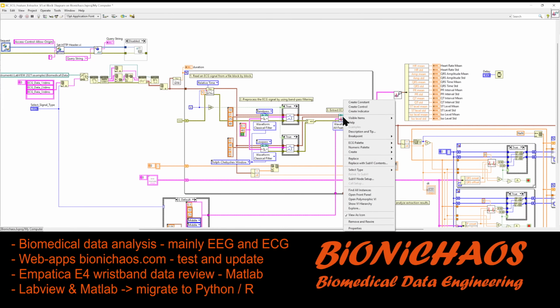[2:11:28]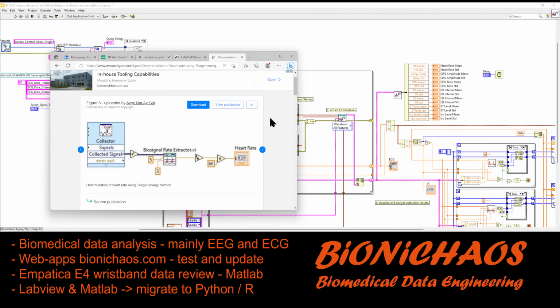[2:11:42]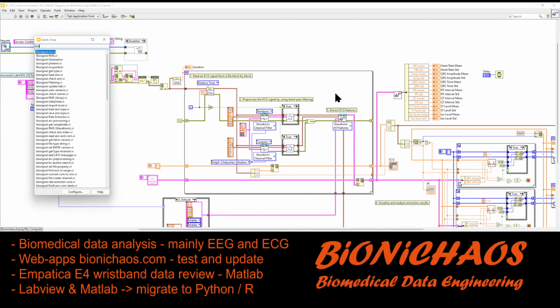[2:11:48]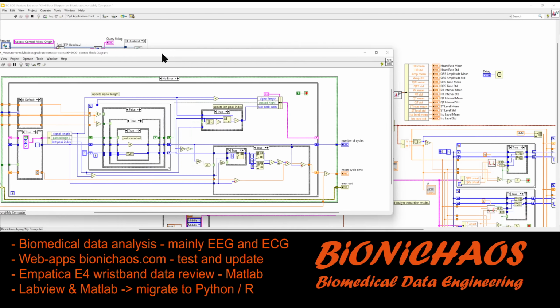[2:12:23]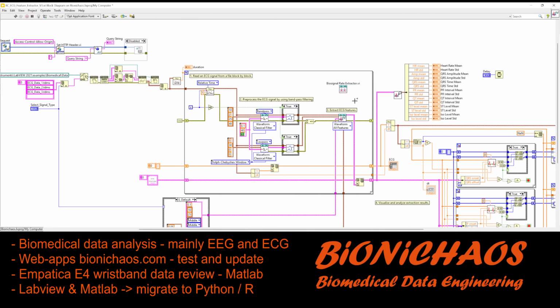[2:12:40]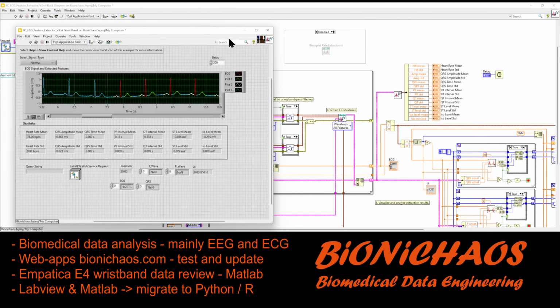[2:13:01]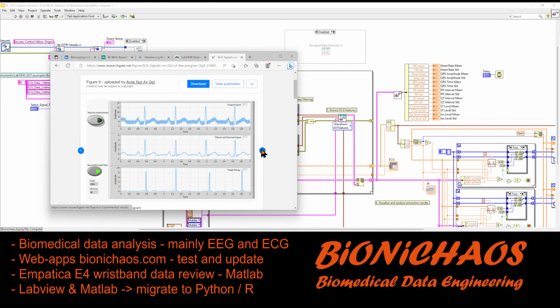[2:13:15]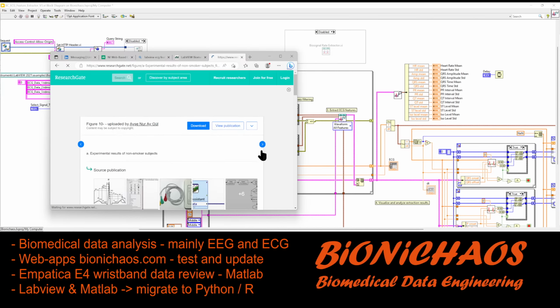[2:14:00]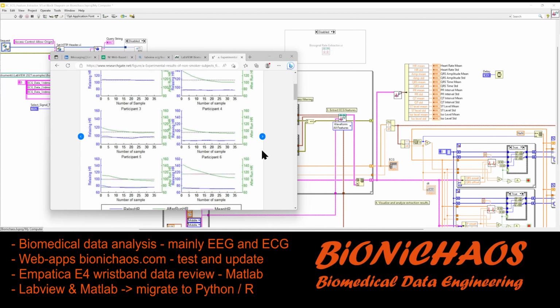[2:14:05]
Yeah, that's okay. Why this aligned? That one delayed. This normal? Doesn't look like a great paper as well. You wouldn't normally publish. I mean, I do publish stuff like that, but in a paper to see a graph like that. I have 6 participants. Relax after run, mean. Go from 60 down to 140. Funny. Number of samples. Why is it not time?
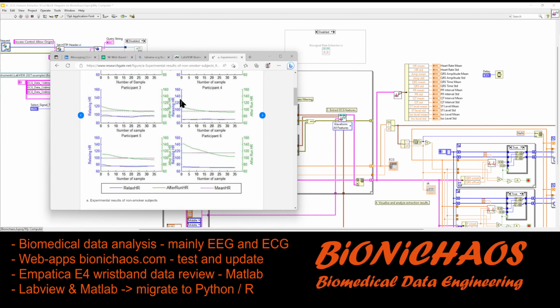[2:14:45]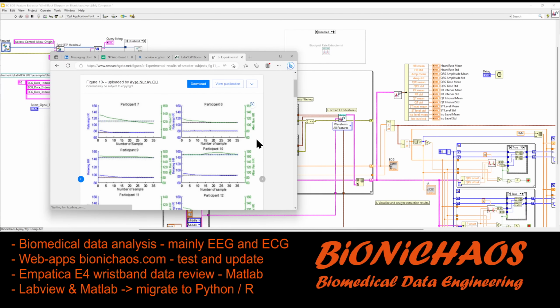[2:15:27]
Well, this is just the same scale. So why do they have? Ooh, why have two y-axes where they both go to 160? No, no, no. Very bad. Bad graph. So in most cases it's the same 60 to 160, except this one here that goes down to 80. Like, what? Why? Rubbish. Oh, they have more participants. Because what you would expect if you just had the one axis is that this green after run will then go down to relaxing. I don't understand what they're even trying to do.
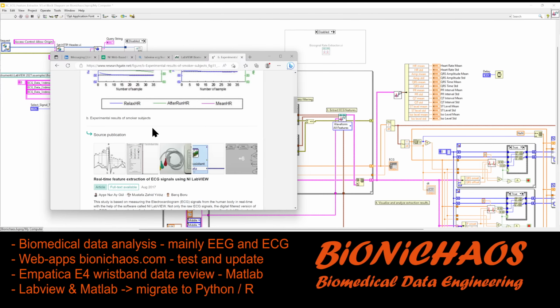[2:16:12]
Ooh, the smoker subjects and non-smoker subjects. Okay. Must all make sense to someone. So where's the summary? You would expect to have a summary of the smoke versus no smoke, if that's what you're going for.
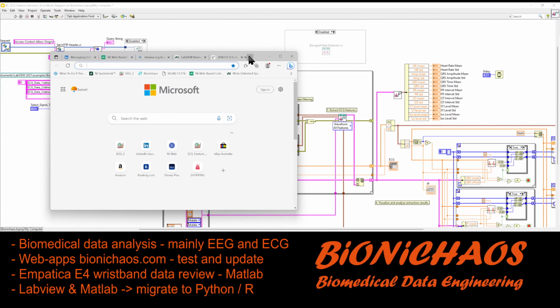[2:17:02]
Is it an ECG module? Never seen anything like that. I use this one. Oh, right, that's right. Okay, this is a regular NI DAQ. It's a simple DAQ, and that's the AD8232 ECG module. Okay. Sorry, I don't know anything about it. It must be super great.
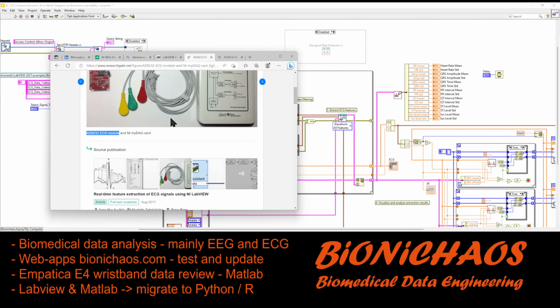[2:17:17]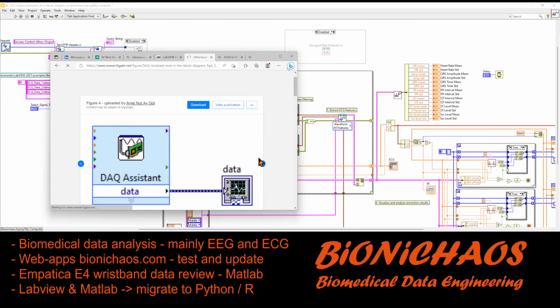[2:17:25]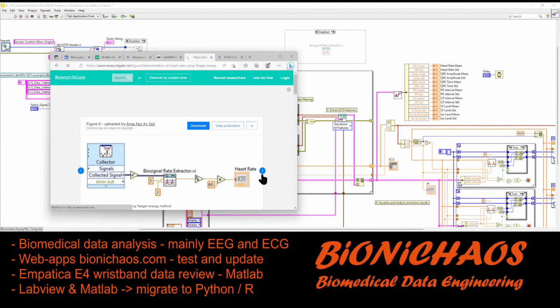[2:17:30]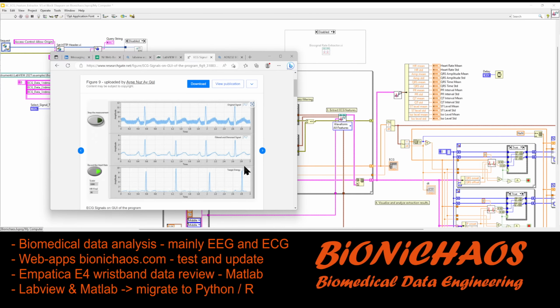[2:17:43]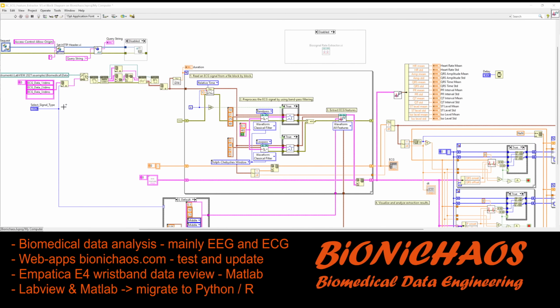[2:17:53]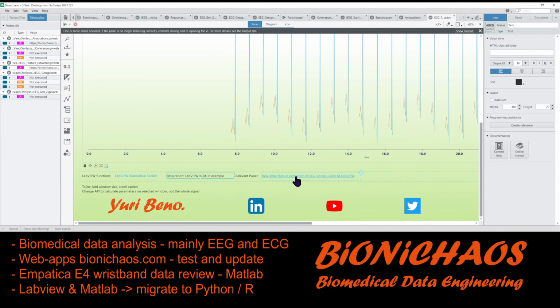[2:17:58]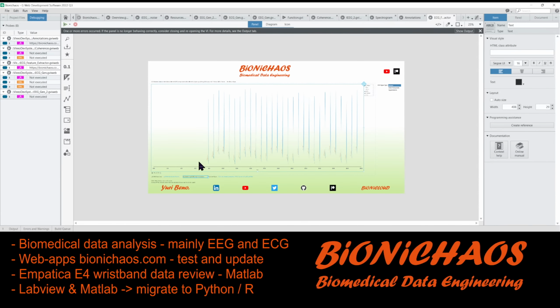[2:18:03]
We get a fairly good signal. What's the signal? Yeah, okay, I get a fairly good signal out of it. I'm not sure what the energy is. To look it up. Anyway, yeah, it's a relevant paper. Just put a link to it. Just say that. Do they have? It's only 3 seconds. That's just an example. No, I get it. Birth samples.
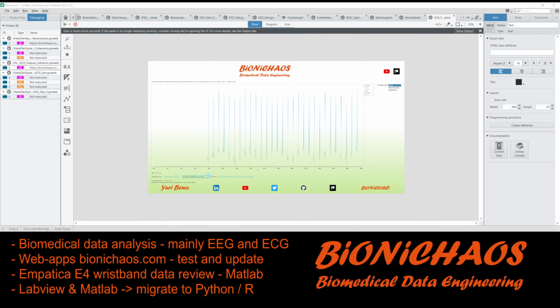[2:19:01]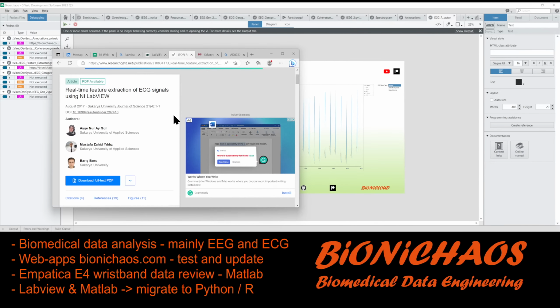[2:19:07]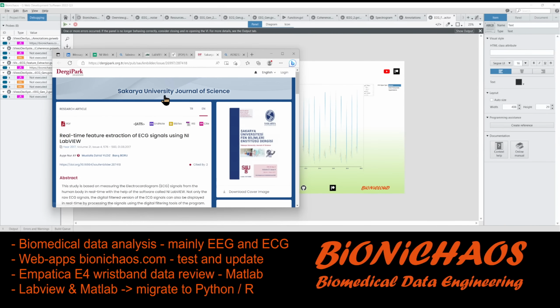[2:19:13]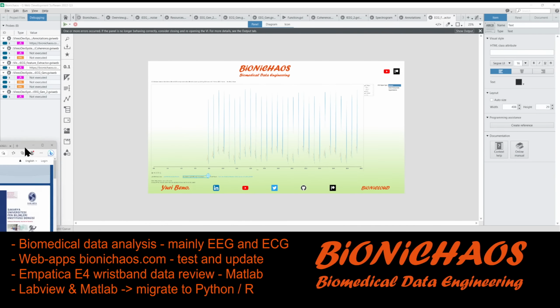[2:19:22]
Where was it published? I never heard of this journal. Hmm. Yeah, it's essentially self-published. Yes, it's not much better than what I do, because these guys are from the Sakarya University and the paper is called Sakarya University Journal of Science. So there you go. But it's the most relevant thing that comes up.
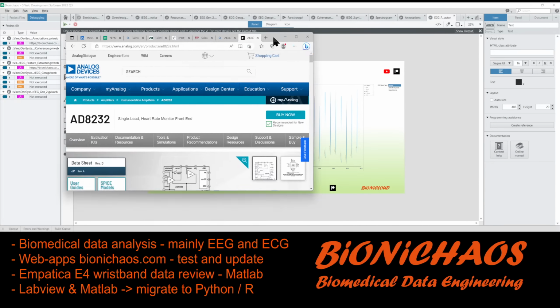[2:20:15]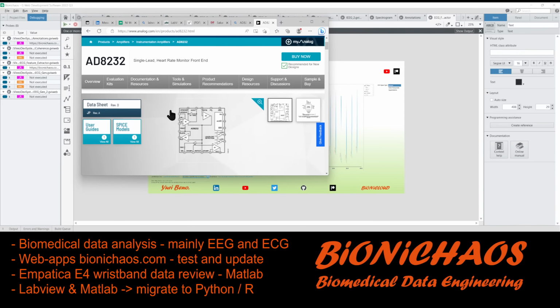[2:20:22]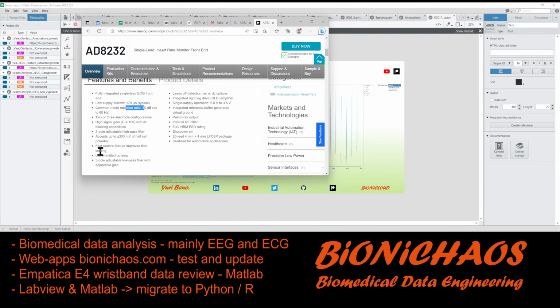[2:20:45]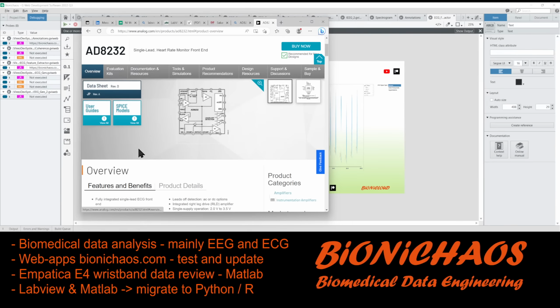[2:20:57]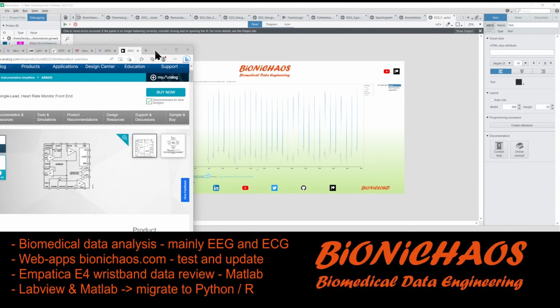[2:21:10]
That ECG amplifier as well, do you really need it? It's another amplifier, right? It's an analog device. Yeah, it's this circuit, single lead. Single lead. No, you do need it. It's only gain of 100. You can do 2 or 3 electrode configuration. Oh, yeah, basic stuff. Is this the whole board? No, that's just the one chip. And they use the module for it. Okay.
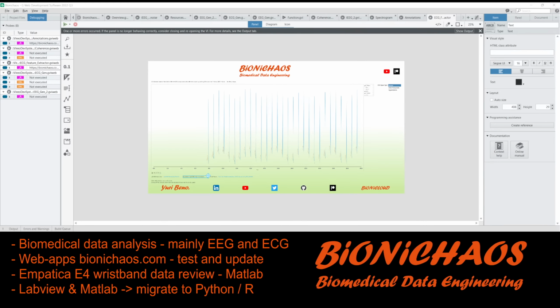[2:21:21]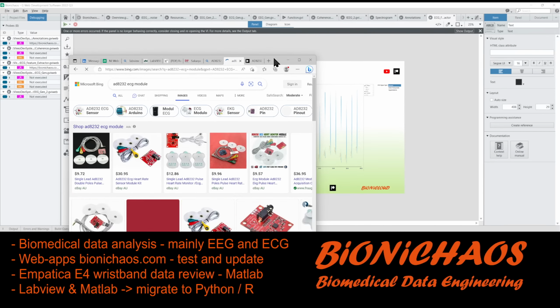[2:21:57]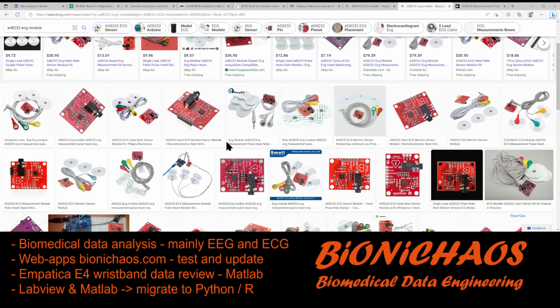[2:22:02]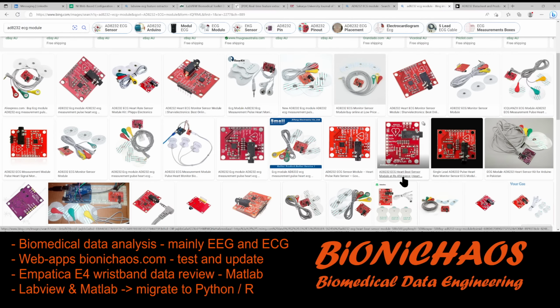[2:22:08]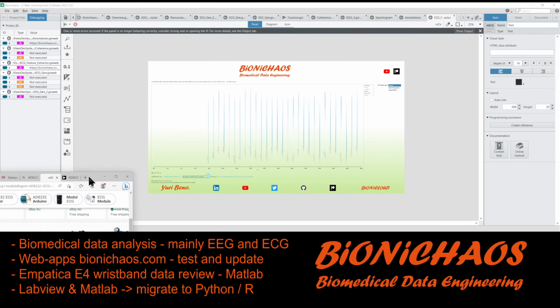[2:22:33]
It's like everywhere. AliExpress. Some of it comes with electrodes. Do have some electrodes. But yes, it's good to know that 3-lead ECG is what you need. You can get a fair enough, good enough signal. Right, so it's originally SparkFun, and SparkFun have a website. Anyway, I'll have a look into just getting one of those.
I wonder what kind of ECG I could record without that, just connecting 3 leads directly to the DAC. I have a different one, so I can set it in a different way. Necessarily need an amplifier, I don't know. Anyway, we'll try it some other time.
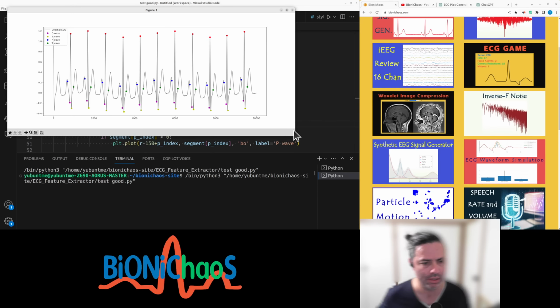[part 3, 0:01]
So we started with this tool that's working more or less okay. We're now turning it into a Flask application. Let's see how that goes. Do we have so far? Is this? We're still getting an error.
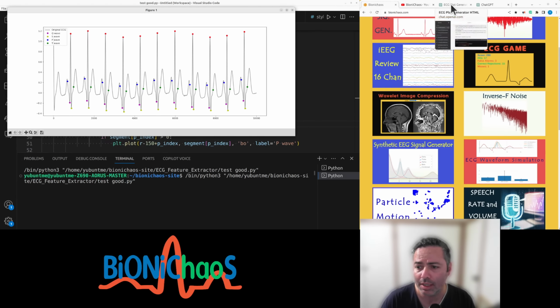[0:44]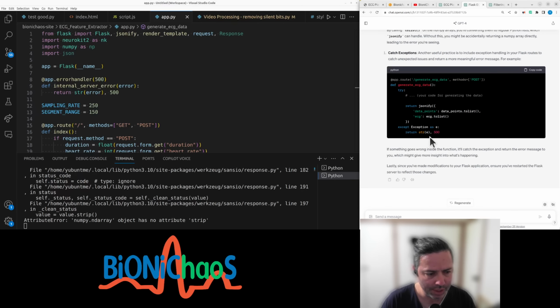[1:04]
This couple of chats. Let's see which one is which. I think this is starting fresh. Yeah, I couldn't solve the error that we are getting. I don't know what's up. That's actually a literature review on the topic of ECG misdiagnosis. We'll get to that in a bit.
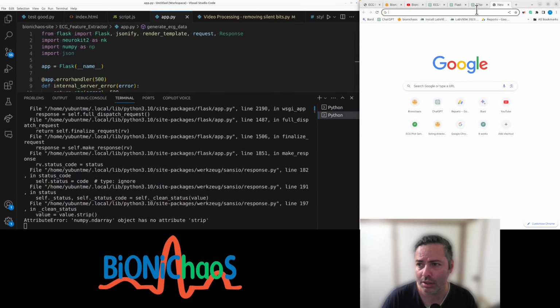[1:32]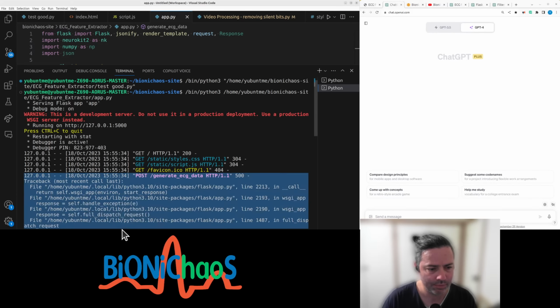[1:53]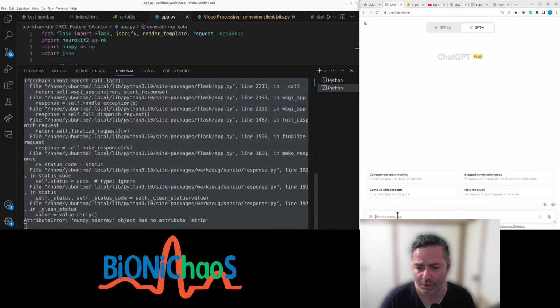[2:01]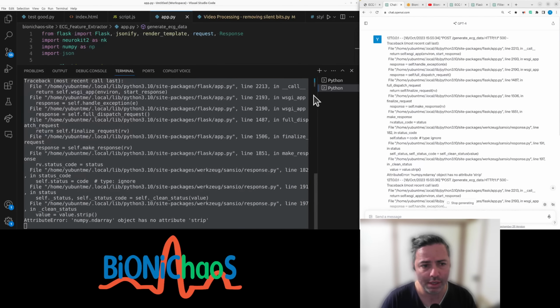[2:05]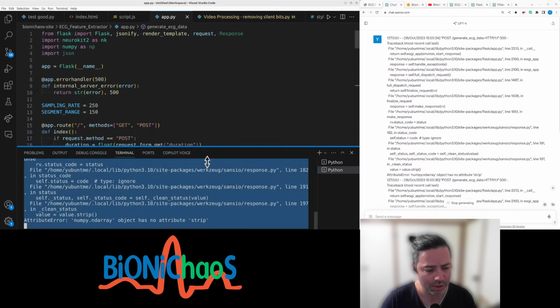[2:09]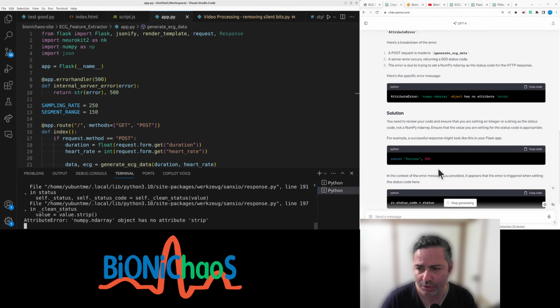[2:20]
Let's actually start another chat. Just pop this in, because before we started with the code and then gave the bot the error message, but maybe if we do it the other way around, give it the error message first to review your code, that you are setting an integer or a string as the status code.
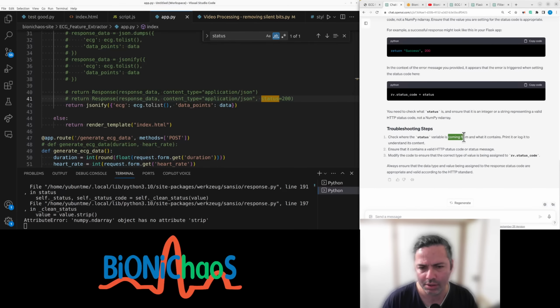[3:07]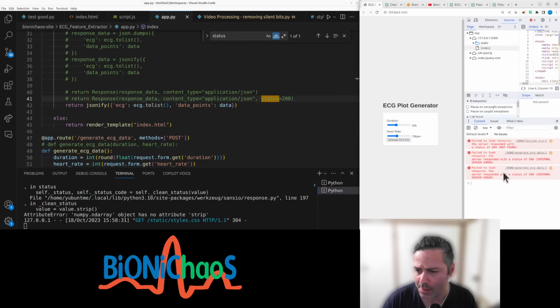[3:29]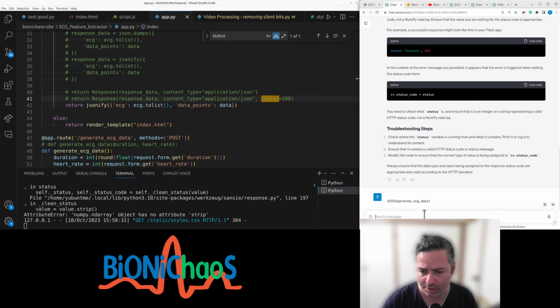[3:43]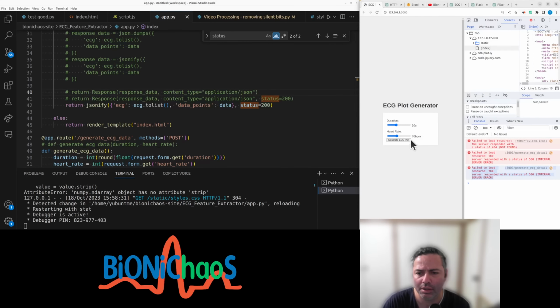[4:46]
That's obviously, wait a sec. And status 200. Can I do that in here? And no. Status code. It's not the solution.
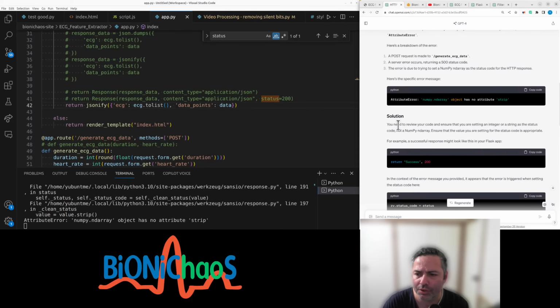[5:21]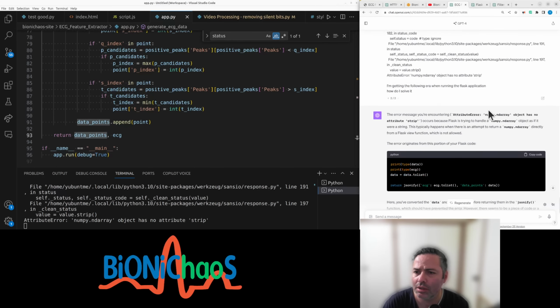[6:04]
To review code. Setting an integer. Duration float. ECG data, generate ECG data. Return data points and ECG. These two are of a wrong type. Let's quickly check the original code. So this is where we started off.
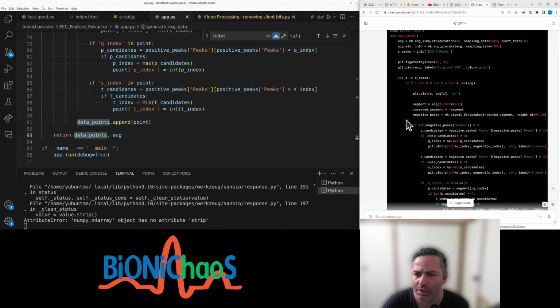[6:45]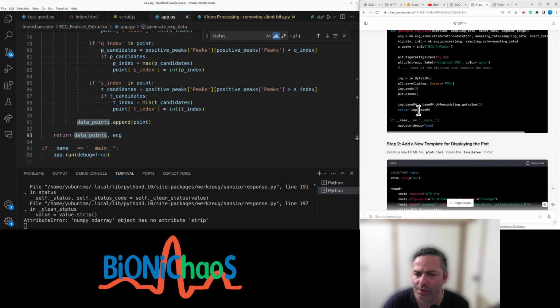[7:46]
That Flask application used to work fine before, mainly after ECG plot, right? Because it was actually generating an image, so we changed that. Still generating image. Still returning an image. It's just something else, but it's still an image. It's HTML.
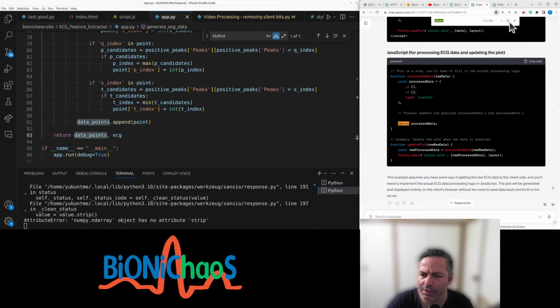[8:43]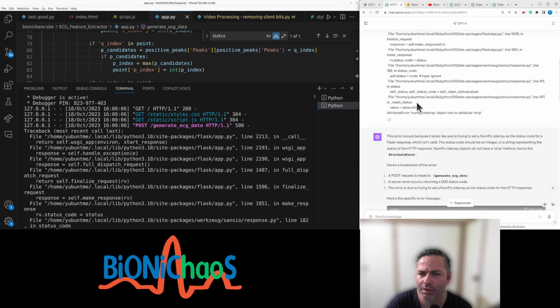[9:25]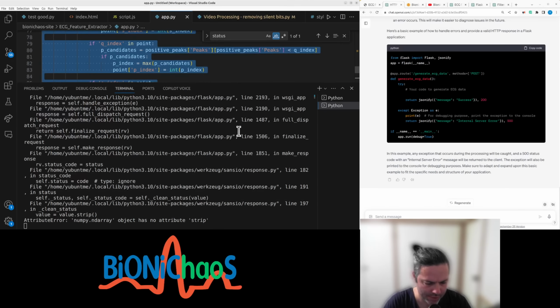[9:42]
Check all the returns from now on. Right, this is returning a JSON file. It's turning the image into JSON, which is weird. Right, this is returning the process data, but this is JavaScript. Not even entirely sure which line is the problem with. So I gave it the error. I gave it another error. Maybe now I can give it the Python code, see what it says.
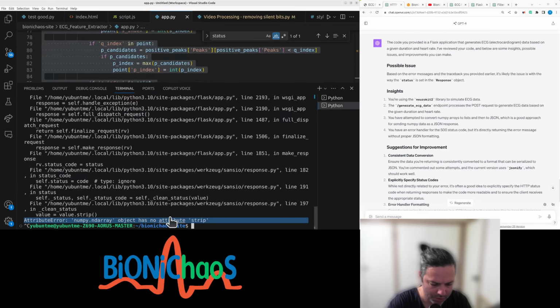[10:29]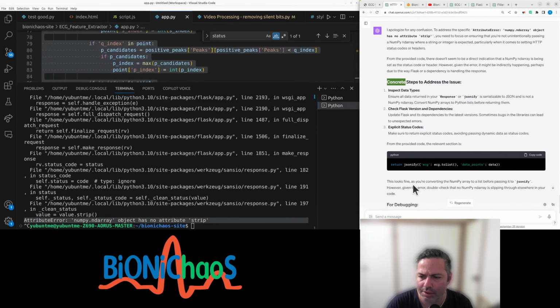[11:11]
It's revised part of the code, but it's not addressing the actual problem. Oops. Control-Shift-C. It focuses on ensuring it's not unintentionally passing a numpy array from the provided code. That doesn't seem to be a direct indication that a numpy array is being set. Concrete steps. Provided code, the relevant section is jsonify.
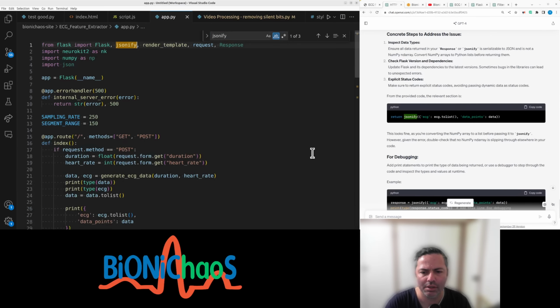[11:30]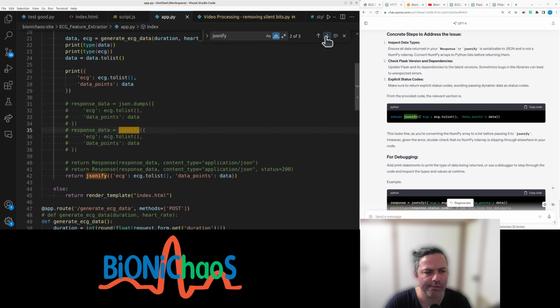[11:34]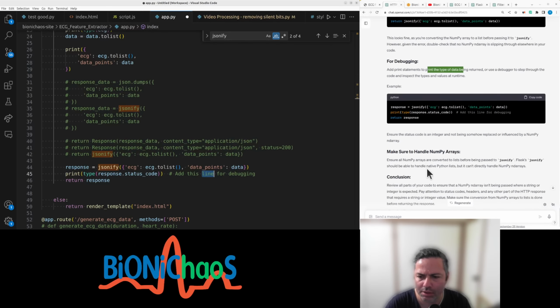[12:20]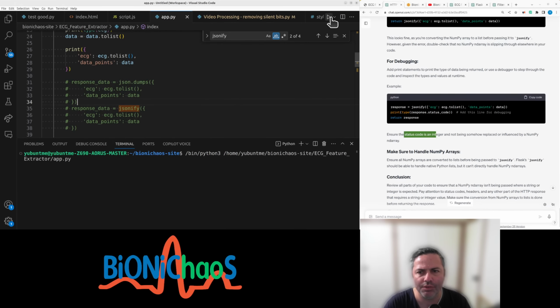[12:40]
To list for debugging, add prints then interpret the type of data. Sure, we're already doing this, but okay, let's do it again. Response type response. Make sure that the status code is an integer and not being somehow replaced or influenced by a numpy array. Let's run this again.
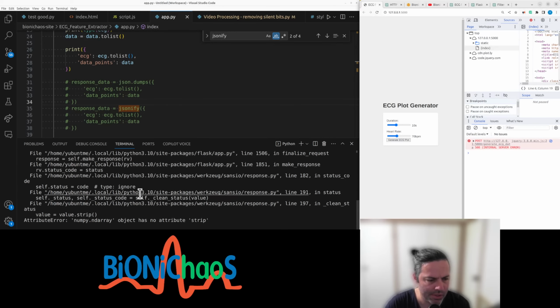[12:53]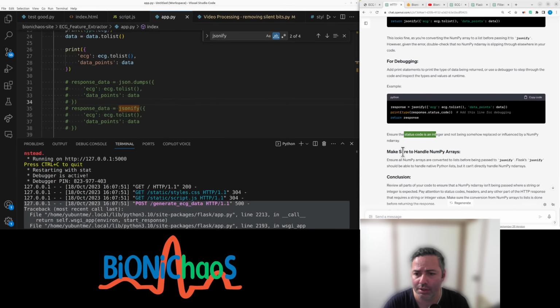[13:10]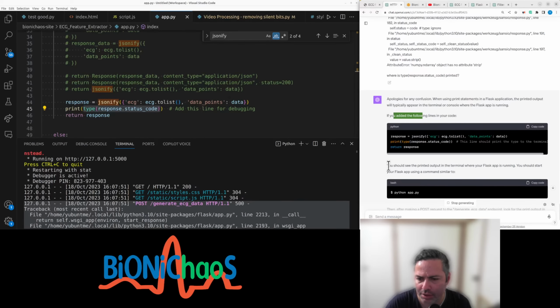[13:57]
So I don't get it. Where? Control-Shift-C. Where is printed? Because I can't really see it. When using the print statement in the Flask application, the printed output typically appears in the terminal console of the Flask app. If you add the following code, you should see the printed output in the terminal where your Flask app is running. You should start your Flask app using, okay.
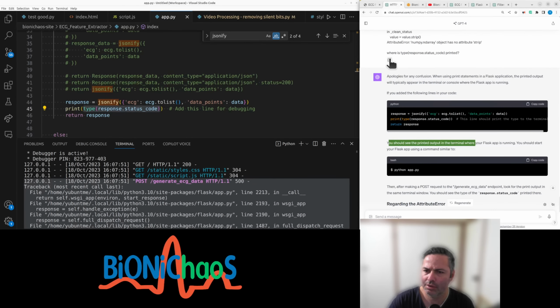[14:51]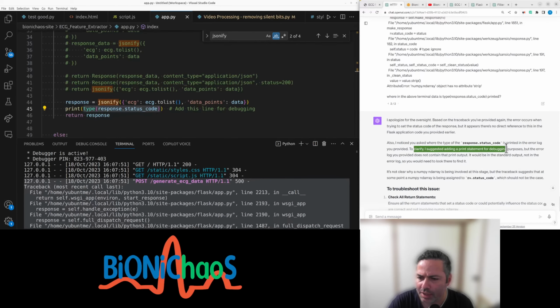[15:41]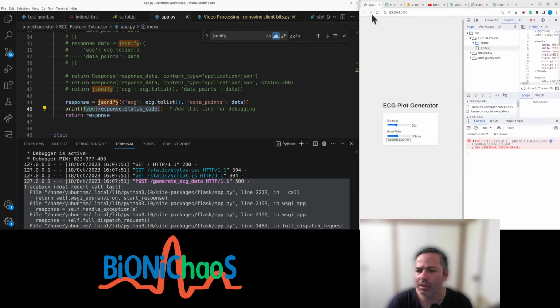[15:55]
So is it in this response or not? Where in the above terminal? So traceback you provided again, the error occurs when trying to set the status code of the response, but it appears there's no direct reference to this in the Flask application code provided earlier. In the error log you provided, I suggested adding the print statement for debugging purposes, but the error log provided does not contain that printout. It would be in the standard output, not in the error log. So we need to look there to find what's in the standard output. It's the standard output. That's the console. It should be over here somewhere.
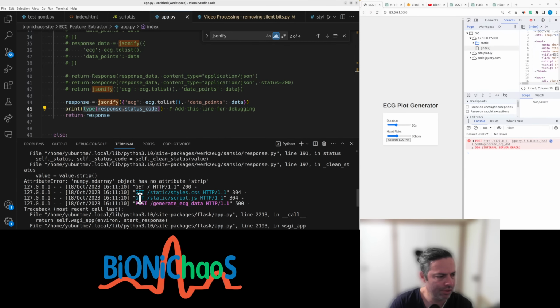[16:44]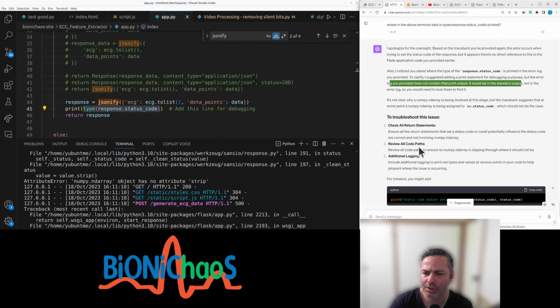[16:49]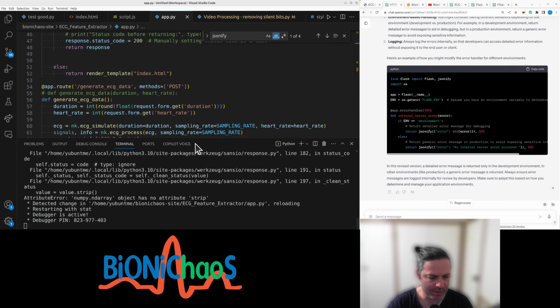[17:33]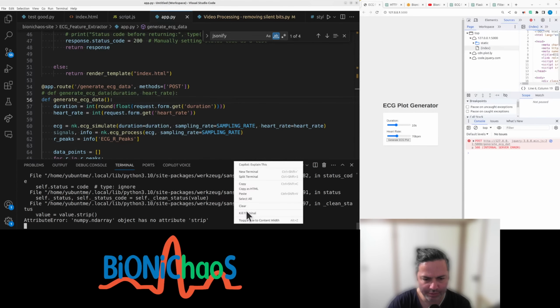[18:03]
Okay, I'm really confused. Right before every return, is there another return? Is this what? Returning 500 regardless of what I do. Eventually this thinks it's some sort of silly mistake that I've made, but I can't see it at the moment. Probably don't need that. Why can't you solve this error? Should be something fairly simple.
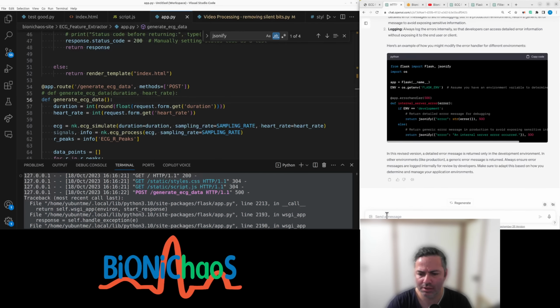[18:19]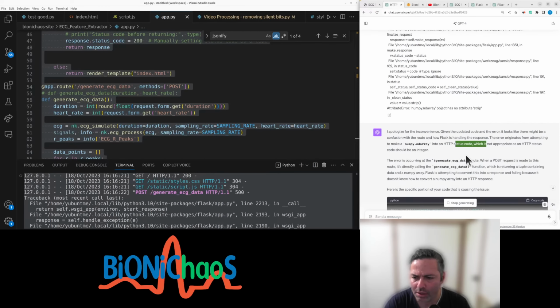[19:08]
Still getting, this is the code. There might be a confusion with the route and how Flask is handling the response. The error originates from attempting to make a numpy array into an HTTP status code, which is not appropriate. Status code should be an integer. They are occurring in the generate ECG data. When the post request is made to this route, it directly calls the generate ECG function, which is returning a tuple containing data and a numpy array. Flask is attempting to convert this into a response and failing because it doesn't know how to convert a numpy array into an HTTP response. Solution.
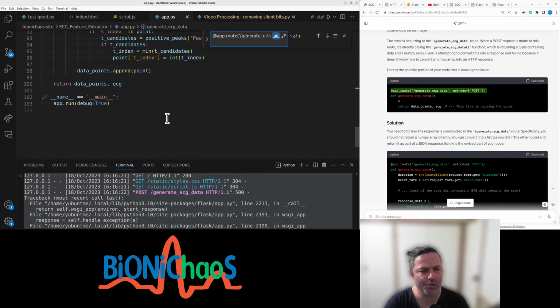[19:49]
At the point of constructing the ECG, you'd fix the response. Specifically, you should not return a NumPy array directly. You can convert it to a list as you did in the other route and return it as part of the JSON response. Below is the revised part of your code.
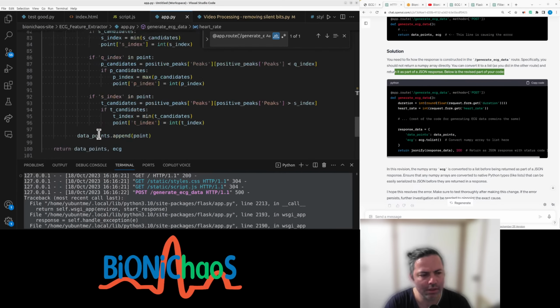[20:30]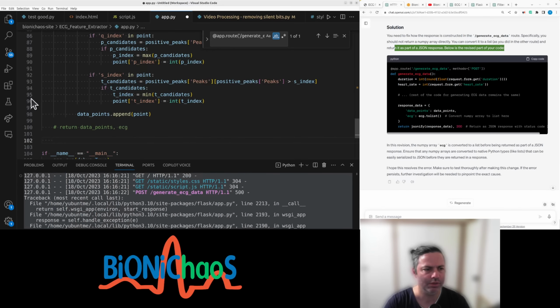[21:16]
Okay, so we have generate ECG data, duration is an integer, heart rate is an integer, that makes sense. Now the response, we have data points. So instead of returning data points and ECG, I assume that instead of this, we do that. Response data, yes, we have ECG, oops, ECG to list.
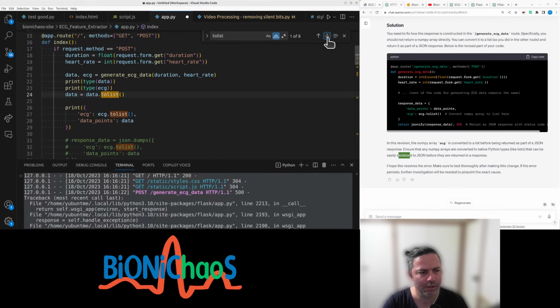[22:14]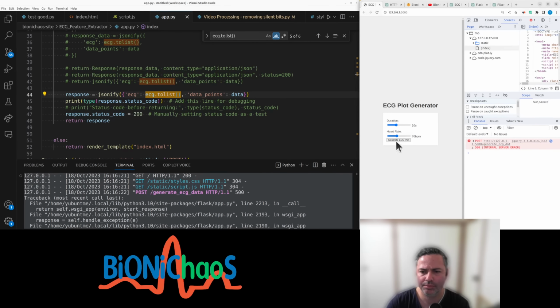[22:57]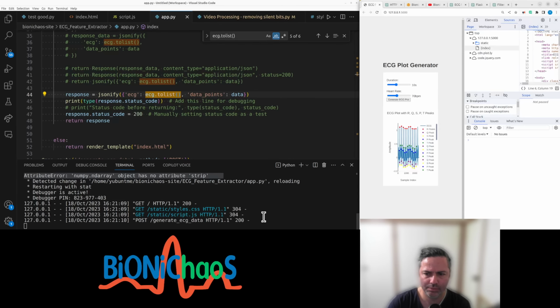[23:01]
So if this ECG is already converted, just the print that's commented out. Yeah, we have it. Response. Right, well, surprisingly, that worked. And the first rule of engineering: if it works, don't break it.
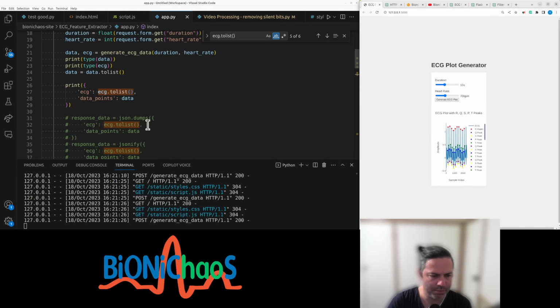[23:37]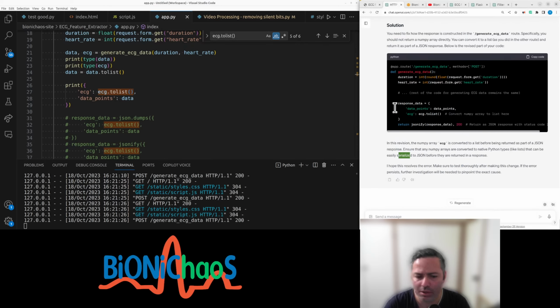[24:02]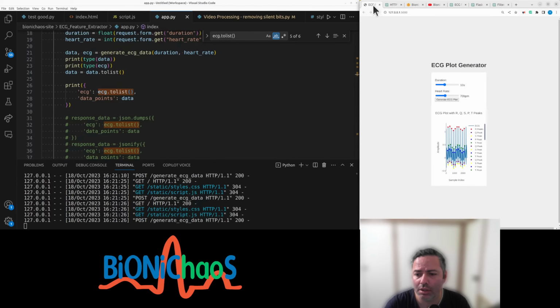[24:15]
Okay, so we are in and can now make progress. GPT-4 only took half an hour to solve this problem, and it did great. Now we can move on. But the good thing about this is, because they added vision, you can upload images there.
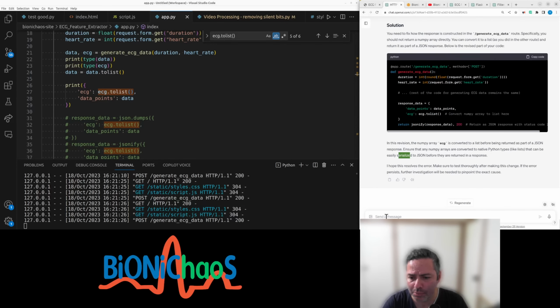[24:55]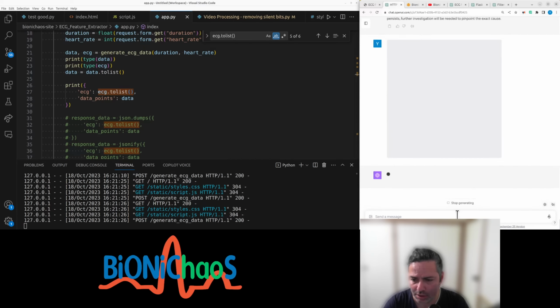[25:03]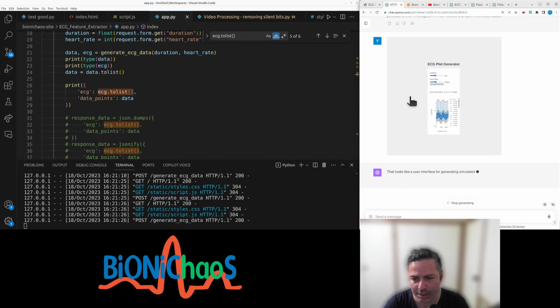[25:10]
So what we can do, we need to obviously fix quite a lot of things. Actually, I'll take that because I needed to fix the scaling for this thing on the page. Yeah, we can pop it into the chat, just copy pasting, and we'll just send it.
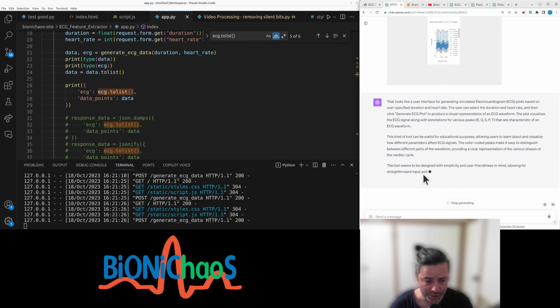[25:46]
So hopefully it can fix some things for us. It's describing the image correctly. I don't know if it's using the previous context to do it. But yes, the user interface generating something similar to the ECG. Yeah, that looks correct. Useful for educational purposes. I could actually turn this later into HTML, use it as a description on the page.
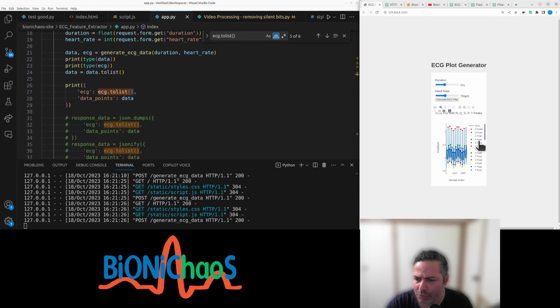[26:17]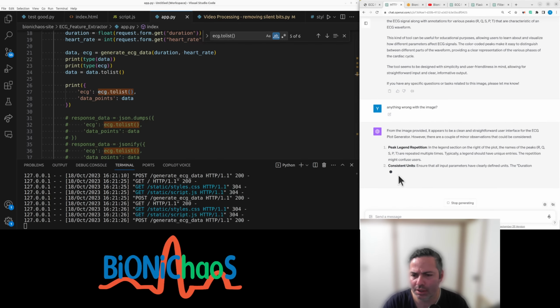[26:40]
Okay, anything wrong with the image? I hope it actually picks up on the fact that we have multiple labels that are the same. RQ, STP, TQ, yeah. So there should not be any repeats in there. Yes, peak legend repetition.
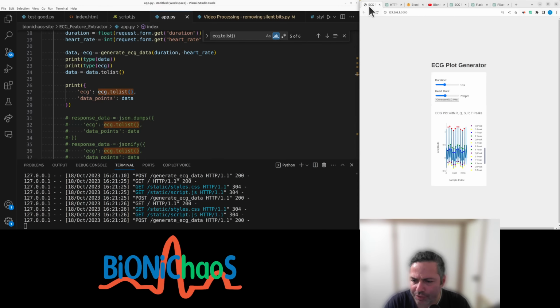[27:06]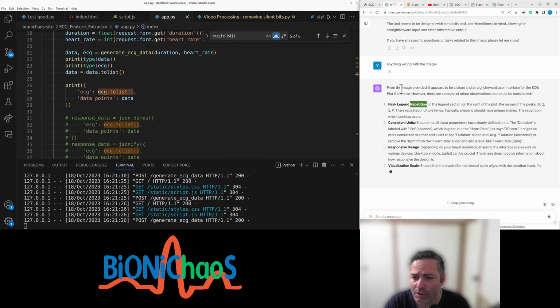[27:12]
I don't remember giving it the JavaScript. It might need the whole code. Consistent units. I don't remember anything being wrong with units, but if you want to fix it, please do. Would definitely like to fix the legend. That's kind of important. Very important. Visualization scale, yeah, that's kind of important as well. I mean, that's the actual chart scale.
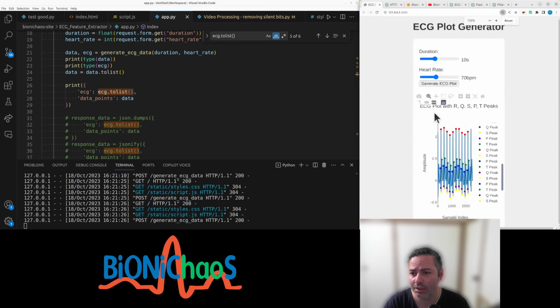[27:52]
Responsive design. Yes, scales very well on various devices. We do want this to scale. Currently, I can zoom in and out, but ideally, when you reload the page, it just scales.
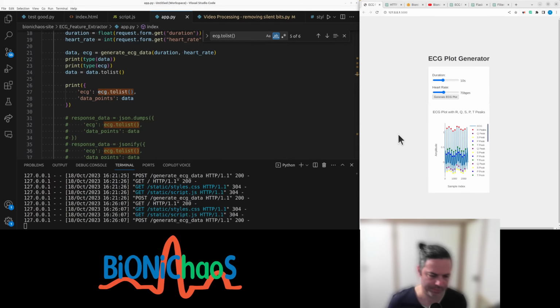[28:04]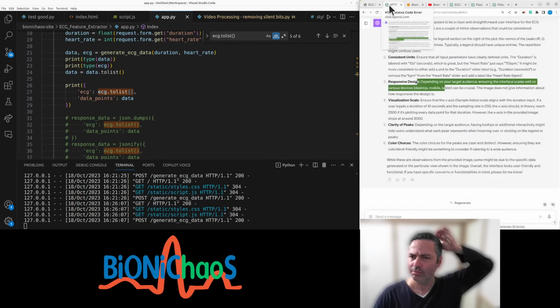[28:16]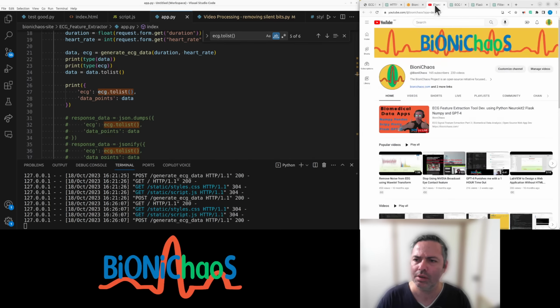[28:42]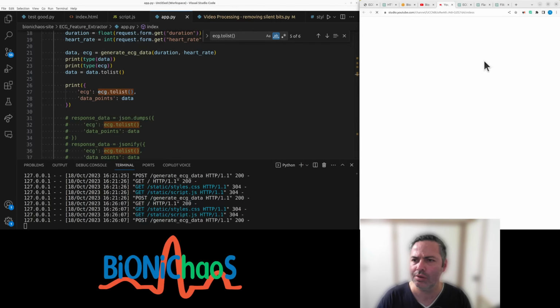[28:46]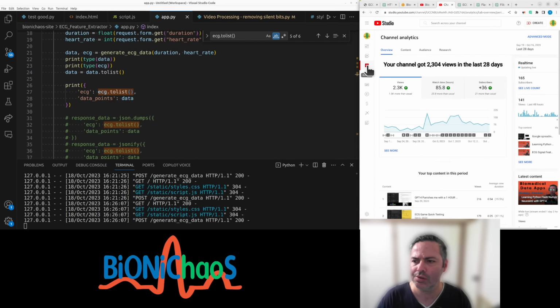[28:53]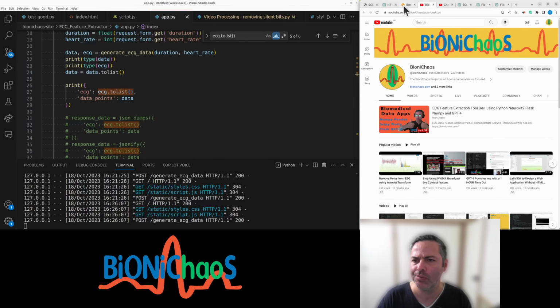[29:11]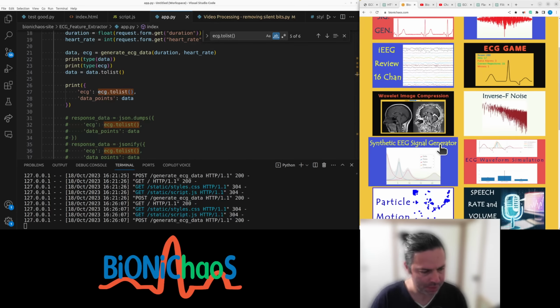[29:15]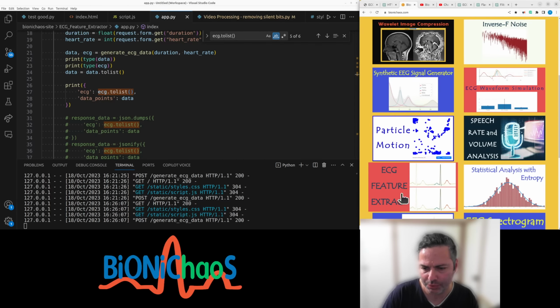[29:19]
For color choices, we have a color palette for the project. Probably didn't know, but we do. We can pop it up on this side, make it available for you to play with.
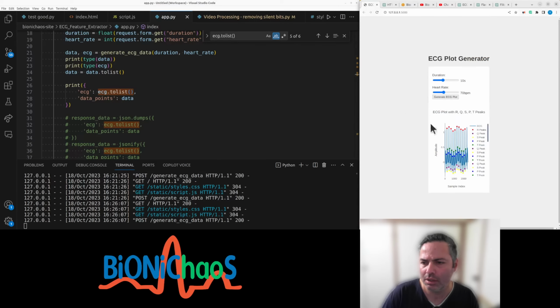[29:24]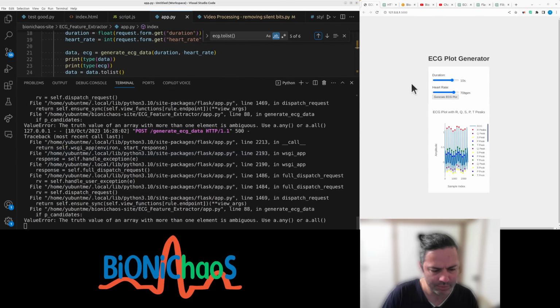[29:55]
What? The truth value of an array with more than one element is ambiguous. What? It's a really odd error. Duration works? No, duration doesn't work. It doesn't work. So that works. There's some noise in it, which is good.
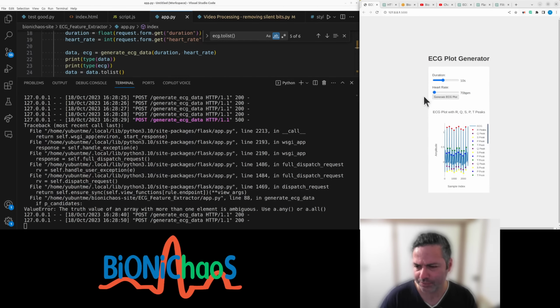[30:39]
There's some sort of heart rate number that is too large. The error is actually not quite relevant, but yeah, we'll have to limit the error margin. Duration, okay, duration does work. This needs to update as well.
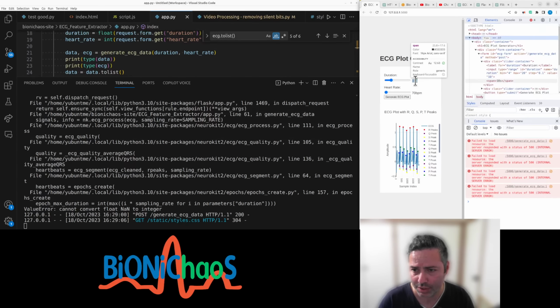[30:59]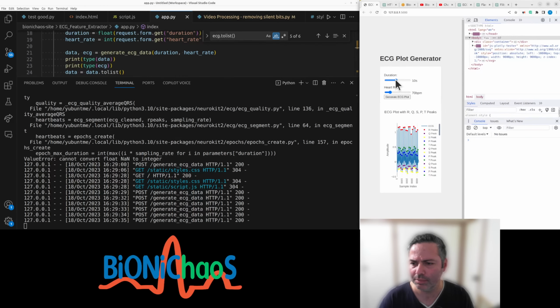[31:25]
I forgot what's called the Control-Shift-C font. What's the name? Generic span. It's called a span. There's another span. Still getting errors. Are we? No, the errors are gone. Something that stayed there from before.
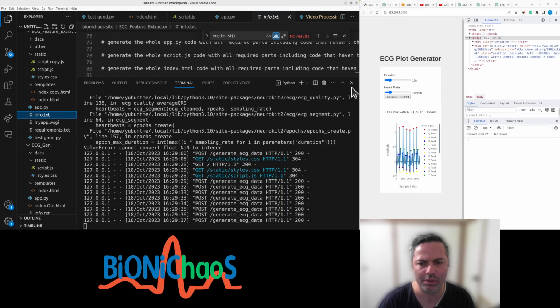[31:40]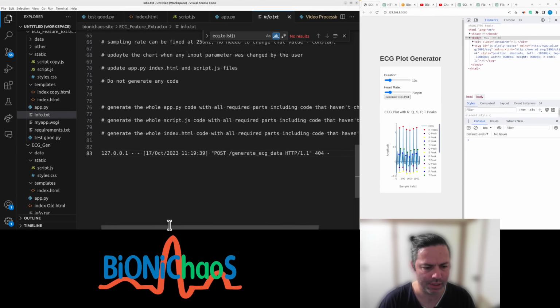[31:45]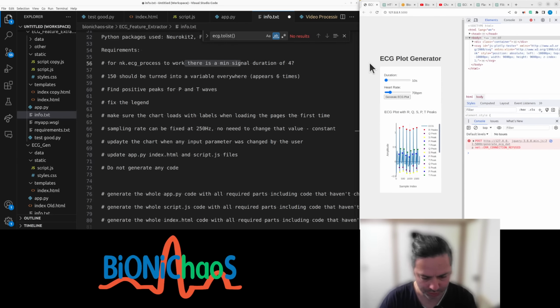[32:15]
Okay, we had then info. Okay, let's close it for a sec. So we had those prompts. This error went away. Requirements. So minimal signal duration. Okay, there's no connection, obviously, because we closed the application. Let's do those one by one.
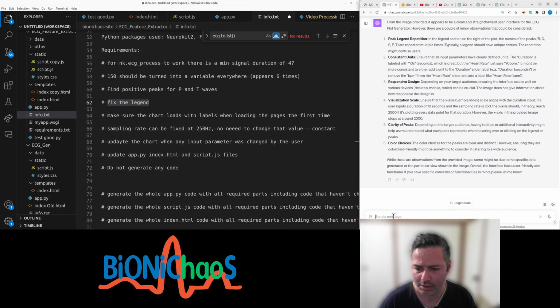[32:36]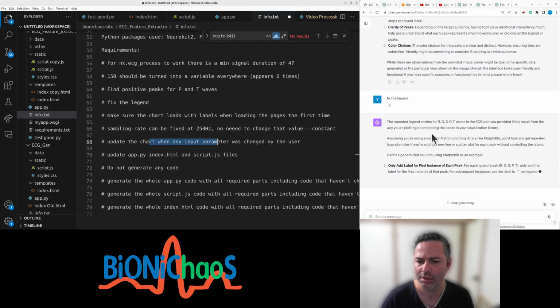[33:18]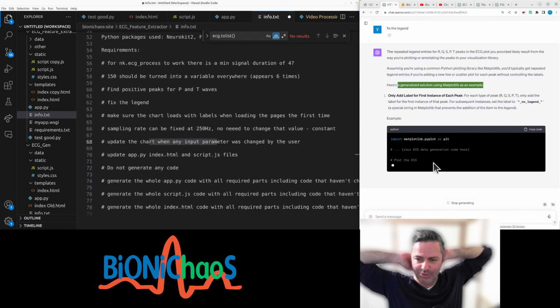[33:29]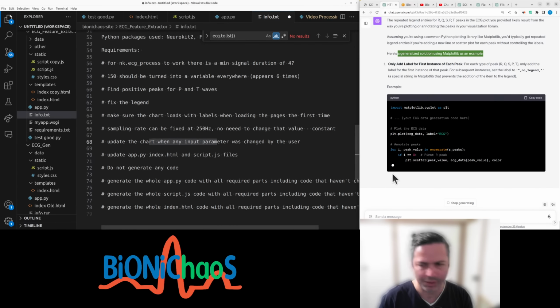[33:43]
So let's fix the legend first. Can you just do it, or you might need more of the code? Yeah, we have that repeated legend thing. Update. Update chart. There's a generalized solution. No, we're not using matplotlib. No, it doesn't have the code.
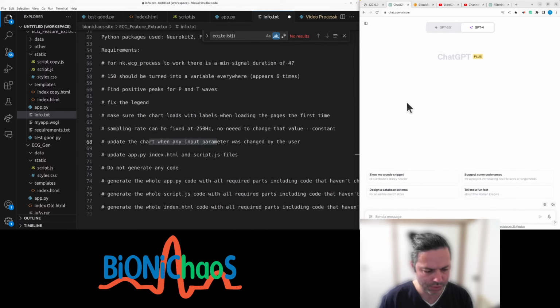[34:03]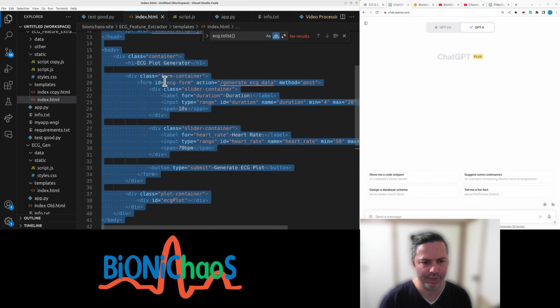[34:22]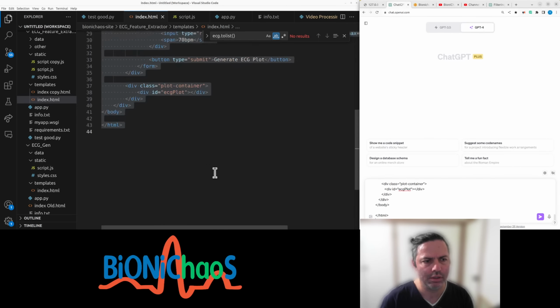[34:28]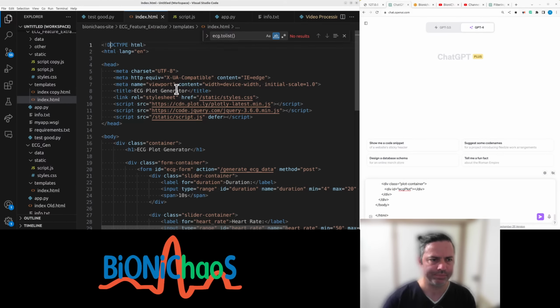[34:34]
Actually, let's start a new chat. This is our literature review. We can close everything else. New chat, GPT-4. Let's start with index HTML. It's kind of obvious what it is.
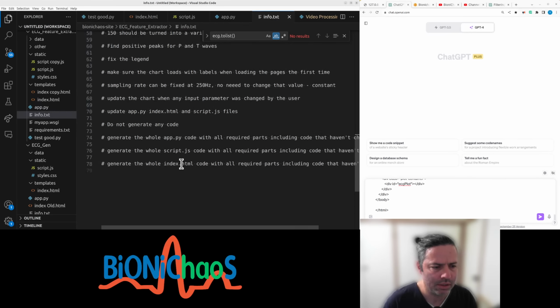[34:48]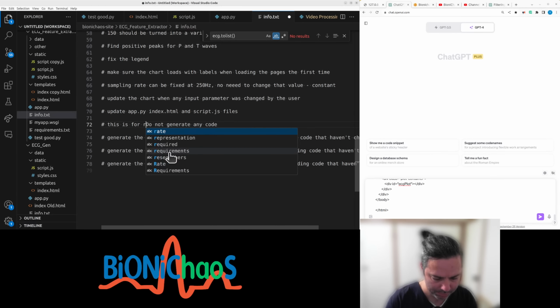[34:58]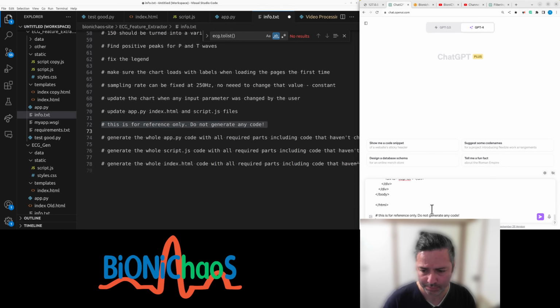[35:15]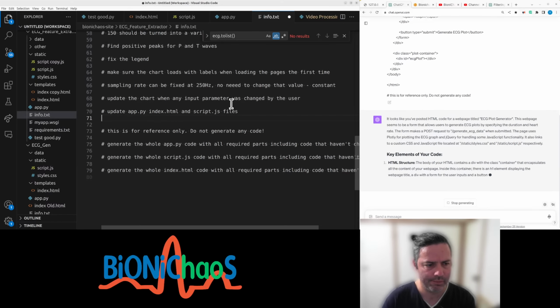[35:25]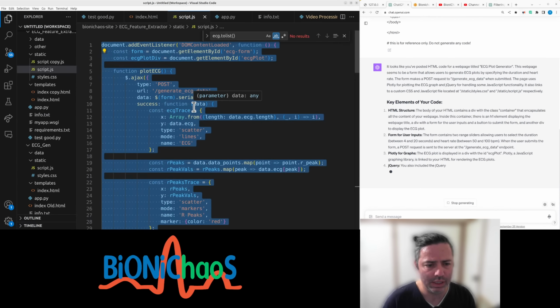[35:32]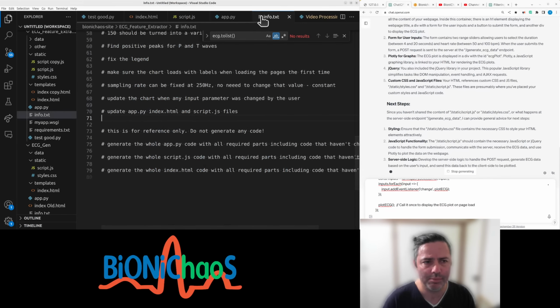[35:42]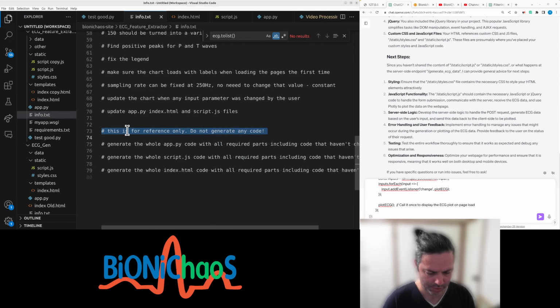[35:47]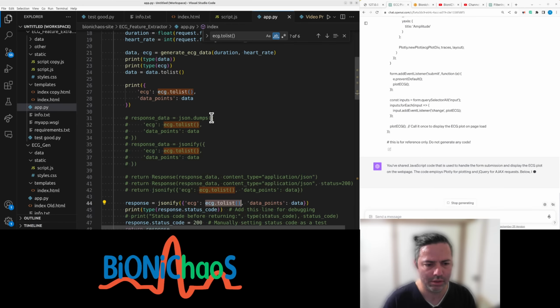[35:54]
Reference. We have that line to not generate any code. This is for reference only. Do not generate any code. So it will need HTML. It will also need the JSON's JavaScript. Again with the same line. Right, this one
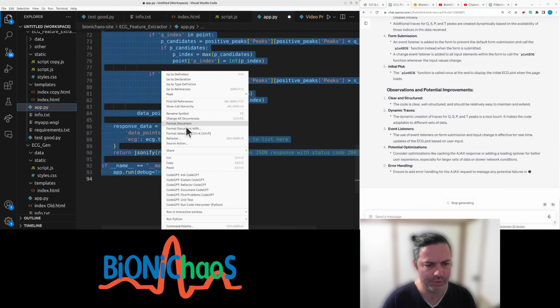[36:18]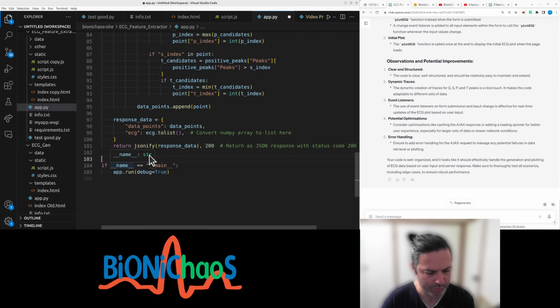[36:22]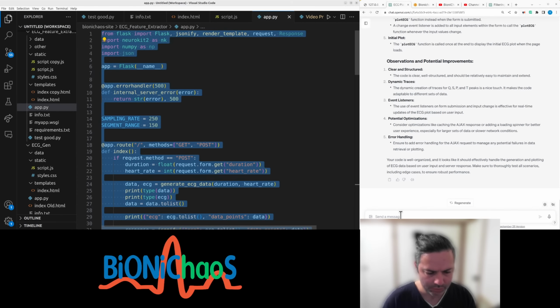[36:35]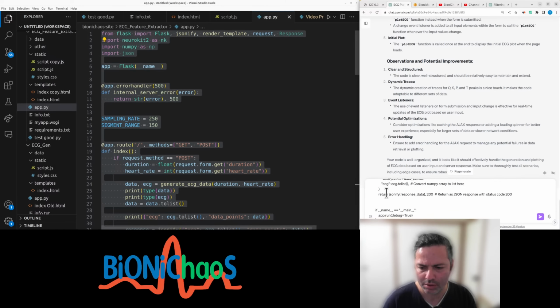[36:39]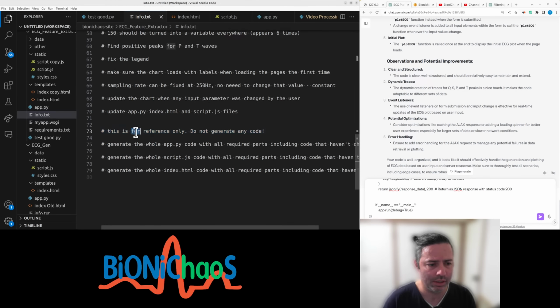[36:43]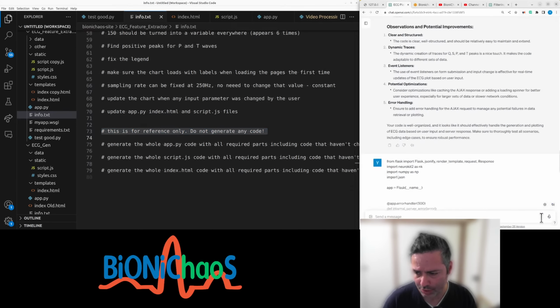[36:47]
we can delete all the troubleshooting. Don't need it anymore. Also format document. So it's adding two spaces, but okay. I assume it knows what it's doing. Pretty sure it wasn't doing this before, but never mind. And this is again reference only, do not generate any code.
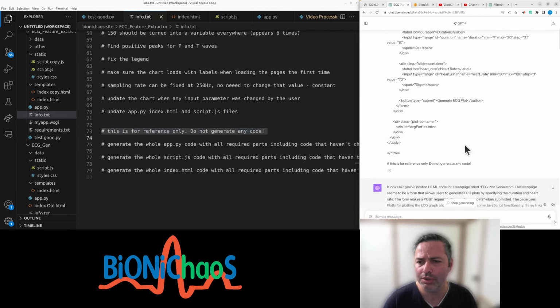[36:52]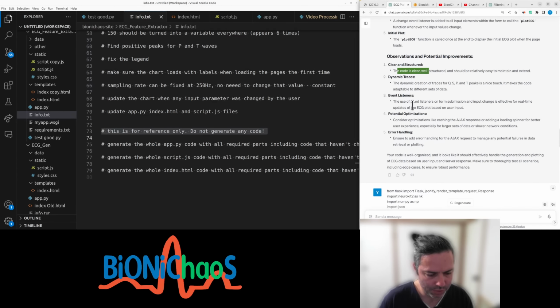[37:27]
Observation: clear and structured. Yes, well, because you made it, so obviously it will be clear and well structured for you. Dynamic creation of traces, peaks, which makes the code adaptable, whatever. Event listeners. Potential optimization: consider caching the Ajax response or adding a loading spinner. Yep, we can maybe look at it later.
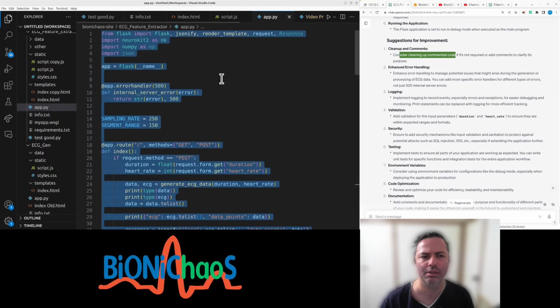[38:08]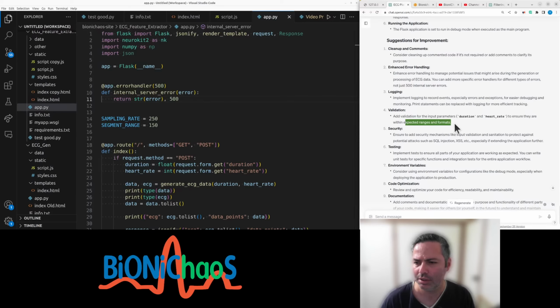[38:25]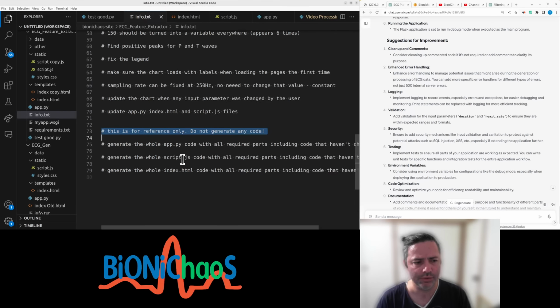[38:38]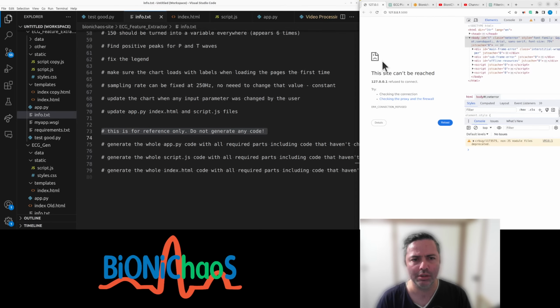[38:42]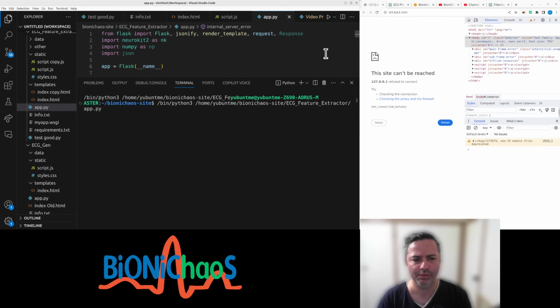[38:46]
Enhance error handling. To have error logging, implement logging, validation. Right, this is actually, well, we can actually limit the input instead of doing validation. But running at the moment, no. Let's run it quickly.
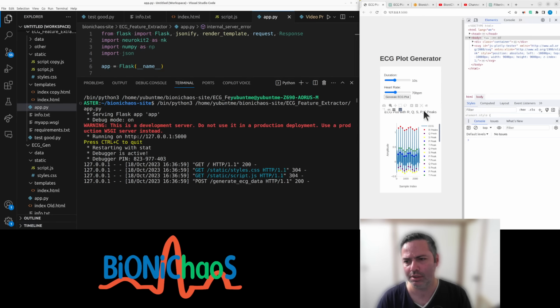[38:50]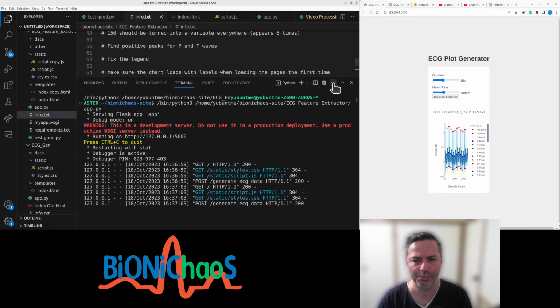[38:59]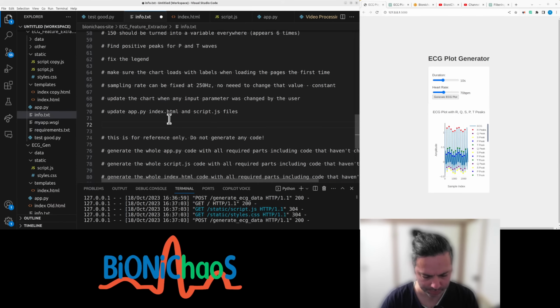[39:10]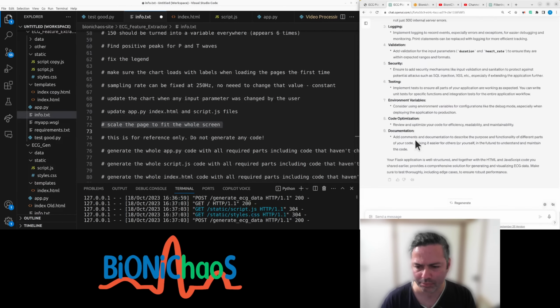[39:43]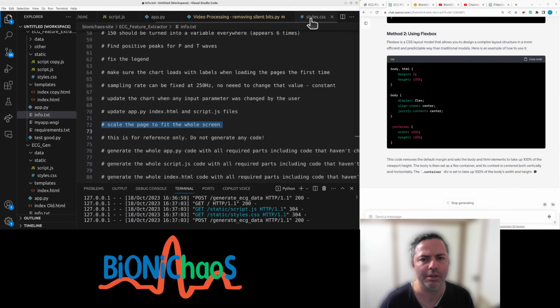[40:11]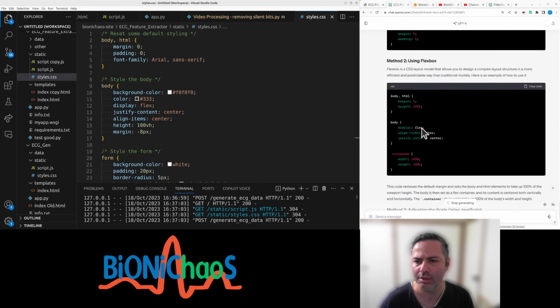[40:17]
There's a few things. Scale the page to fit the whole screen. We'll come back to those in a bit. Actually, don't need that many methods.
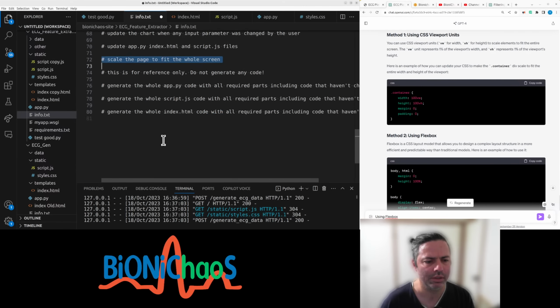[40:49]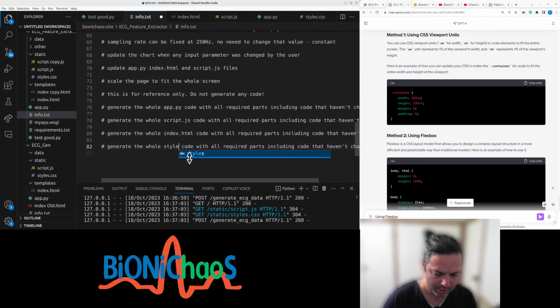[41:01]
Using Flexbox, using JavaScript. Can we using Flexbox? We want to generate the whole styles CSS.
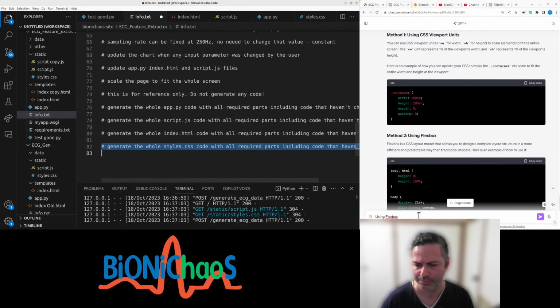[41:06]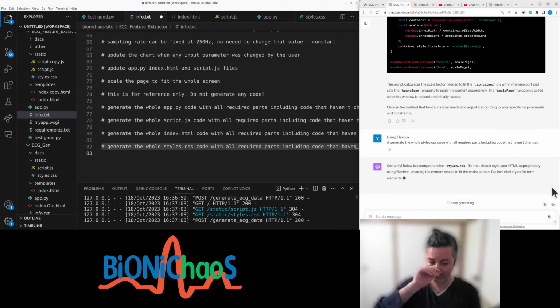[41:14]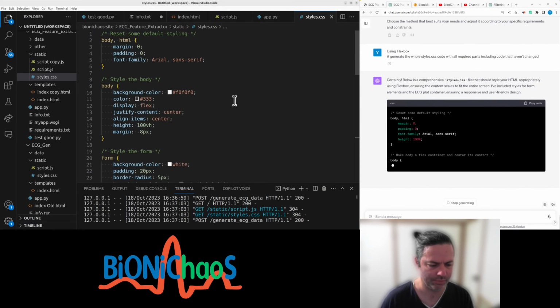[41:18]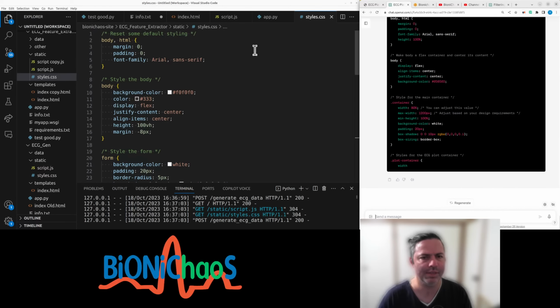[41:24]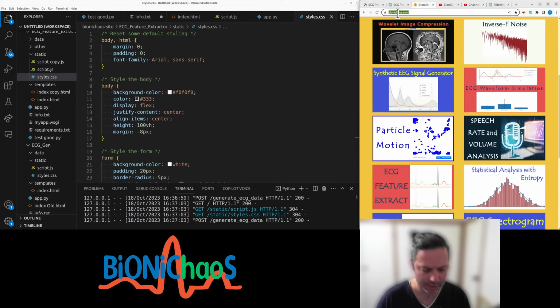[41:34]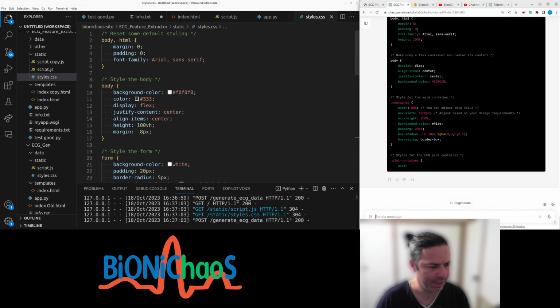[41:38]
Actually, can we also have a color scheme? Color scheme. Do we have a color scheme? Yes, we do. We have a color palette. Let's find that.
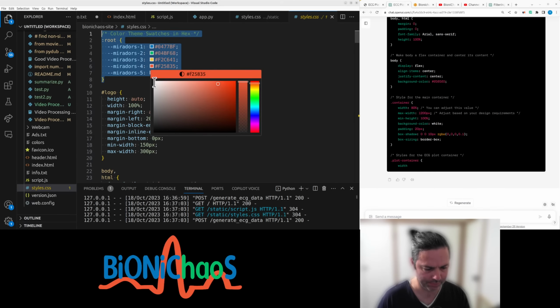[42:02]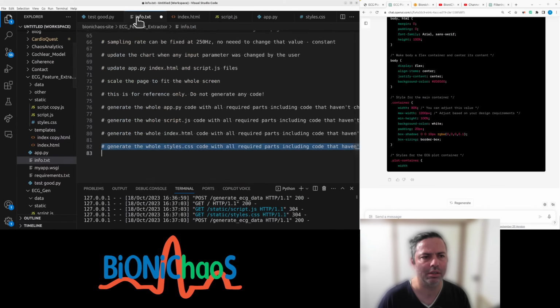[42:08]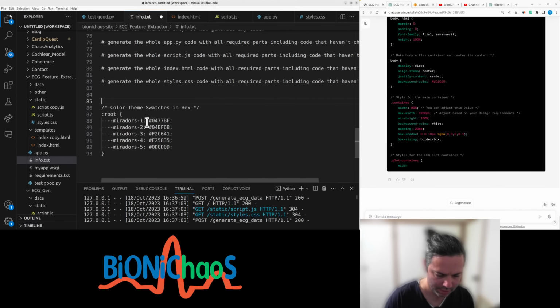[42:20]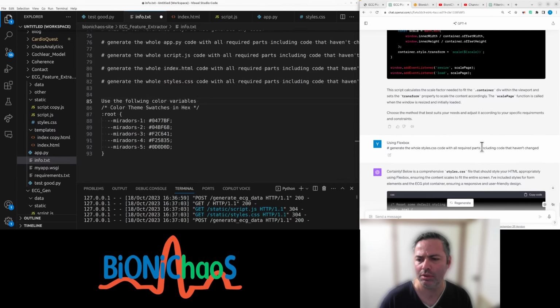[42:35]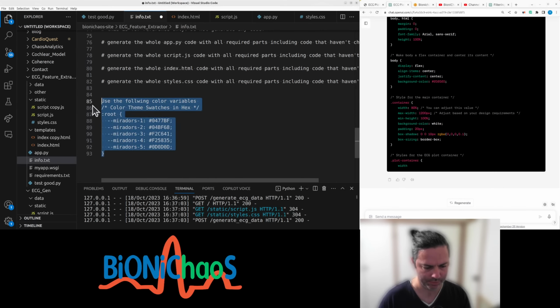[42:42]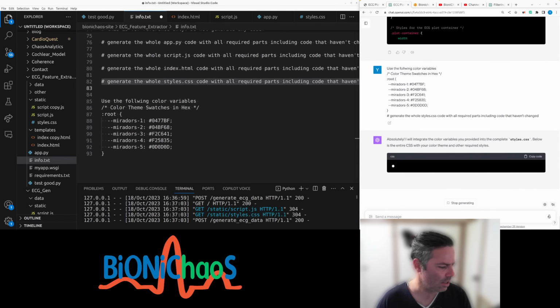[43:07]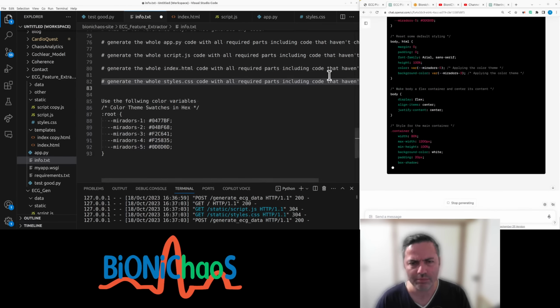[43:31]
Use the following color variables. Generate the whole CSS. Generate the whole CSS. Right. It's using those color variables. In CSS, you can have variables. It will hopefully just use them throughout.
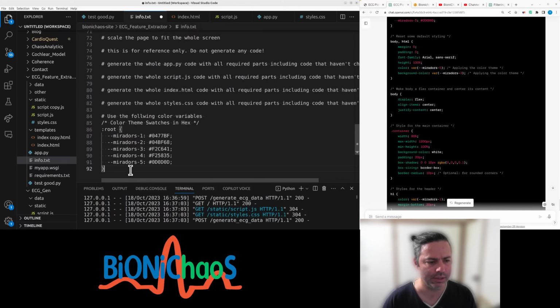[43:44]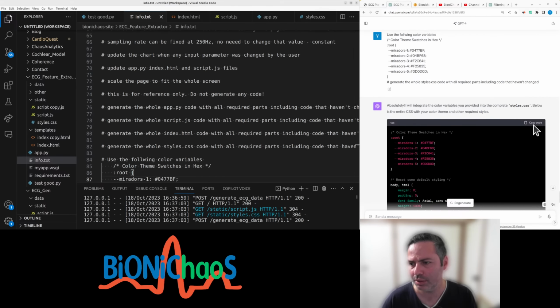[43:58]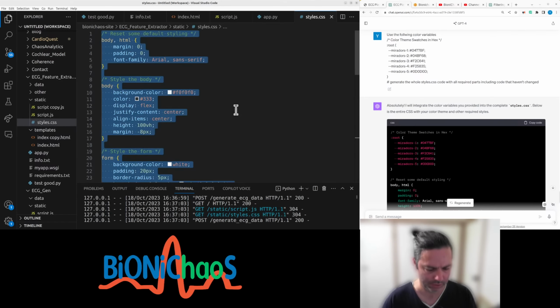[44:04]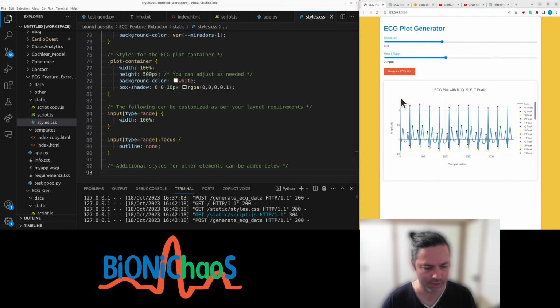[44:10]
Just label that. We'll sort out our prompts in a bit. A copy code styles. Right. Whoa. This looks much better, doesn't it? The labels are accurate except the first and the last one there.
Right, another thing is this I'm actually getting quite, so this will be duration of 10 seconds. And that is correct. Just take a minute break.
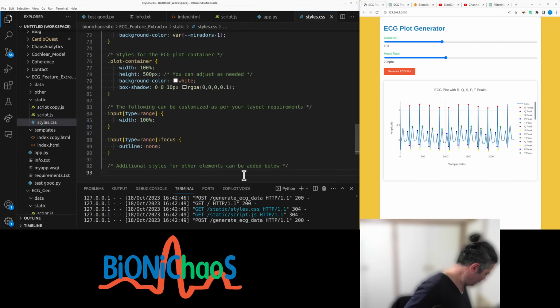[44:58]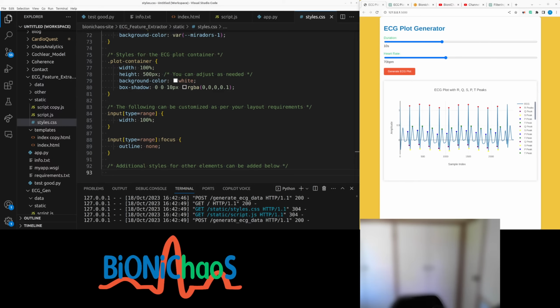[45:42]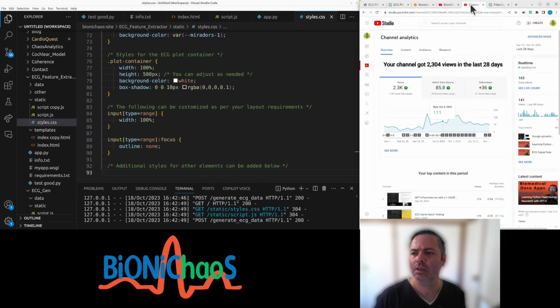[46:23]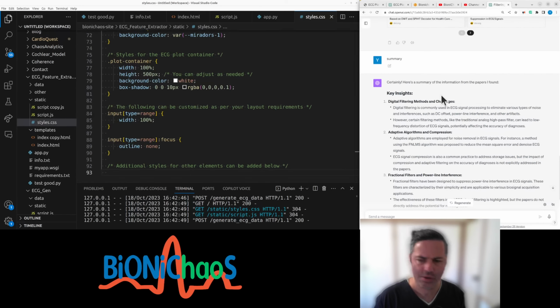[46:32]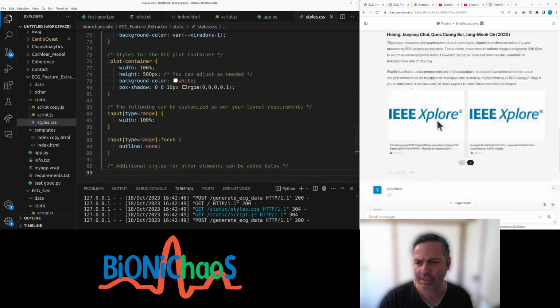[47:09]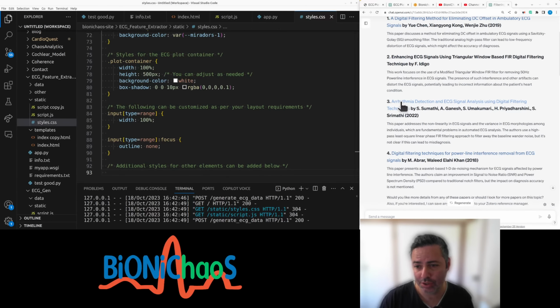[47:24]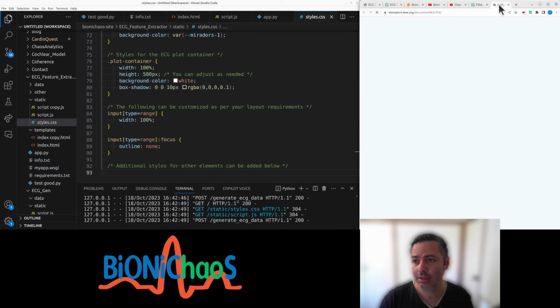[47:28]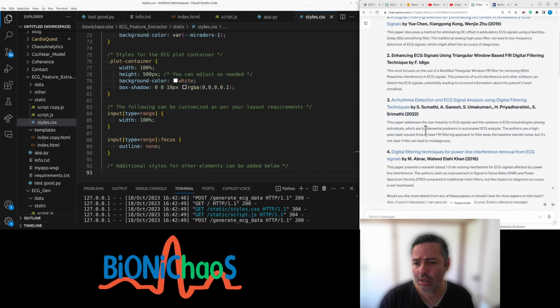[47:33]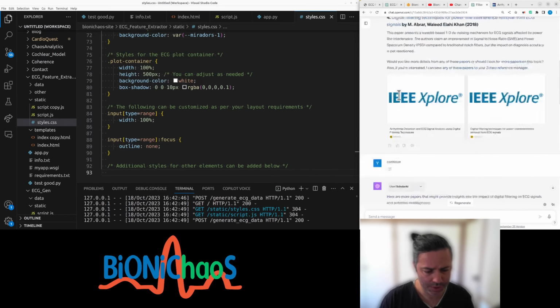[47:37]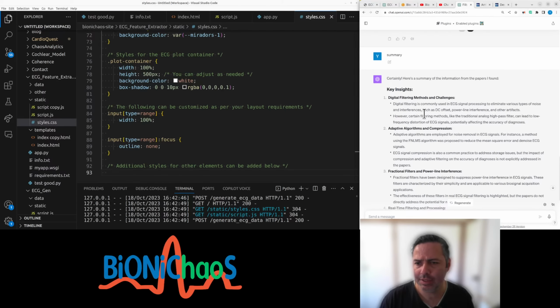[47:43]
We're also writing this blog on how digital filtering of ECG signals can cause misdiagnosis, using this plugin that actually searches Google Scholar. So it's actually giving you legit articles that actually work, not like a bot or a regular ChatGPT that makes up articles. It gave us a summary, but yes, in the conclusion, this is important, that there is actually lack of explicit discussion on how this filtering technique could potentially lead to misdiagnosis. So I don't know why no one is discussing it.
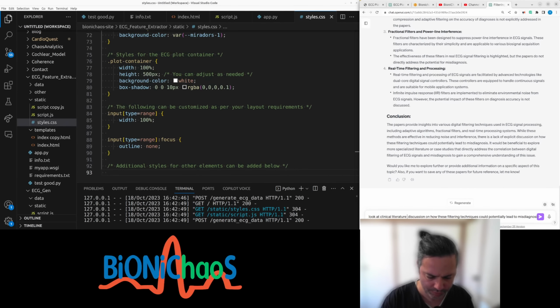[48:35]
Maybe should potentially look for some clinical journals. So look at clinical literature for discussion on how ECG data processing and filtering potentially lead to misdiagnosis. Let's see if it actually can do that or not.
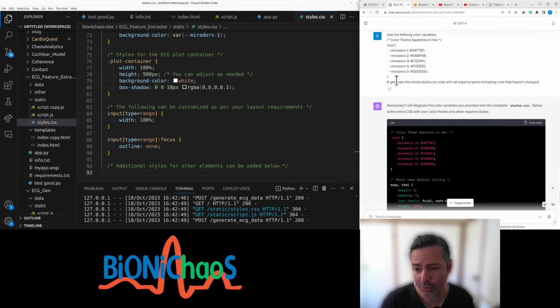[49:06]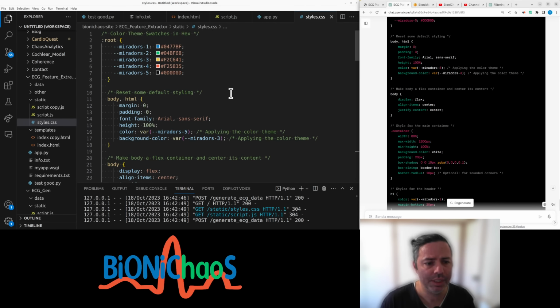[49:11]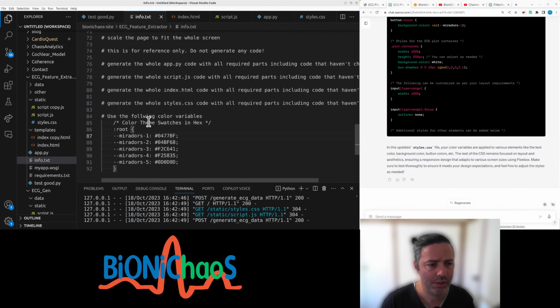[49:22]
Right, so it's using that Scholar. Yeah, just let it work, let it do its job. In the meantime, right, so we did that. The window is now scaling. Scale the page. It's also like a general thing. Oops. Not a great text editor, this one.
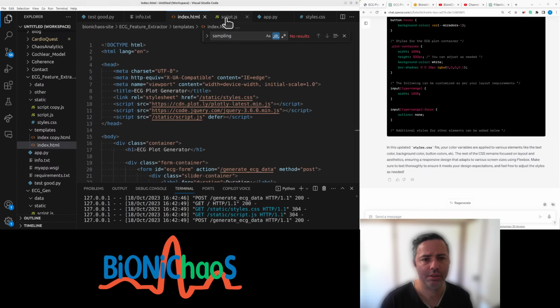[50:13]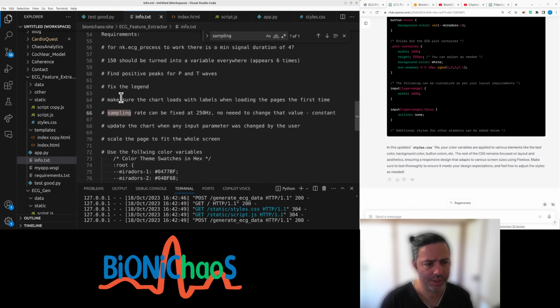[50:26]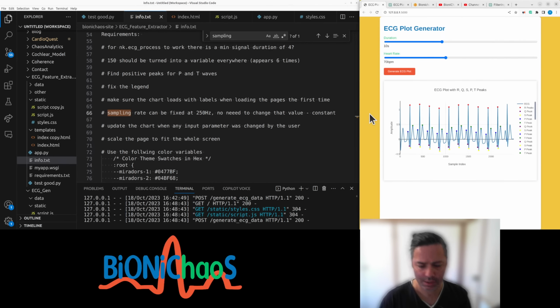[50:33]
Sampling rate. Let's check the sampling rate. Right, I have to unselect that. Yes, sampling rate is selected. So that's okay. Make sure the chart loads with labels when loading page. Let's double check that. Control F5 as well. That's working okay. The legend.
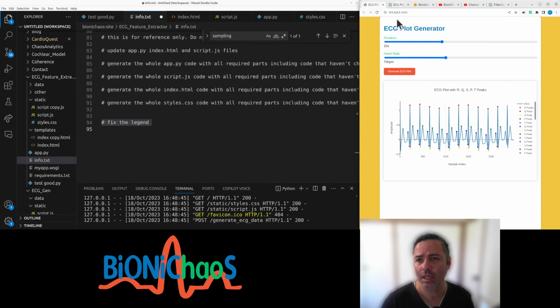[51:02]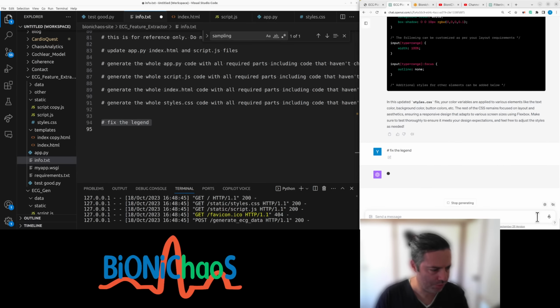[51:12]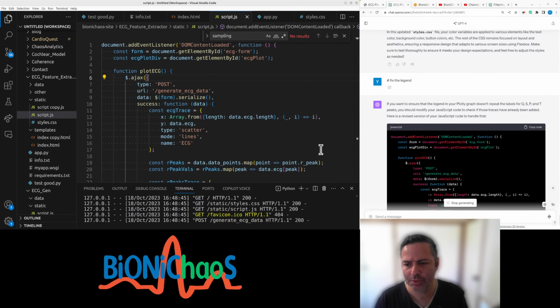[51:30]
The legend is not the legend. Pretty sure it already did it, but let's do this again. Doesn't repeat the labels. You should modify the JavaScript. Trace has already been added. So in JavaScript, is it generating the whole JavaScript or just the changes? I don't know.
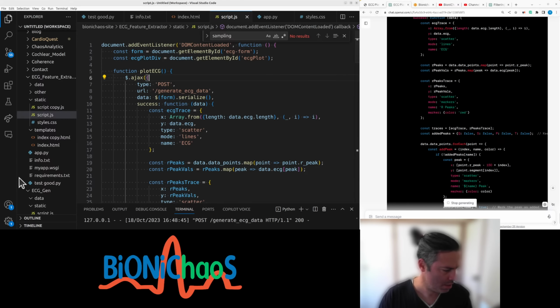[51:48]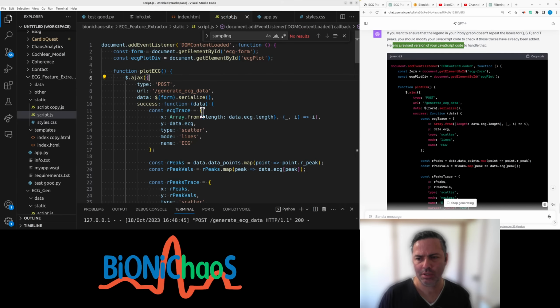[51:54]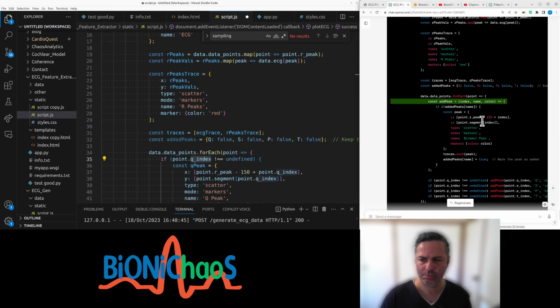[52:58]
Plotting const color. Yeah, we could change those colors to scheme as well. Or in the charts, it might just remain what it is. Added peaks. So what's up with this? Keep track of added peaks. Okay. I get what it's trying to do. So once they, for each point Q, okay, const. Okay, it's quite different. I mean, as soon as it's doing everything else correctly, I don't mind.
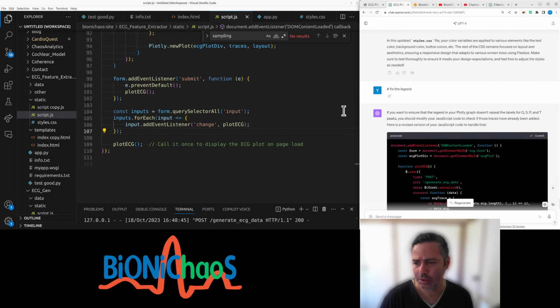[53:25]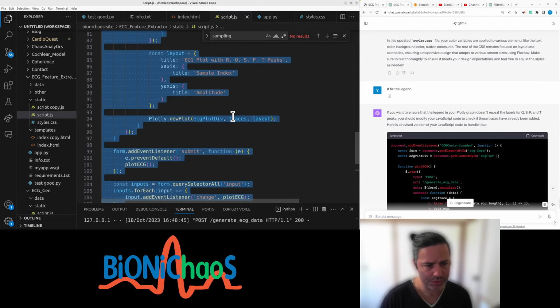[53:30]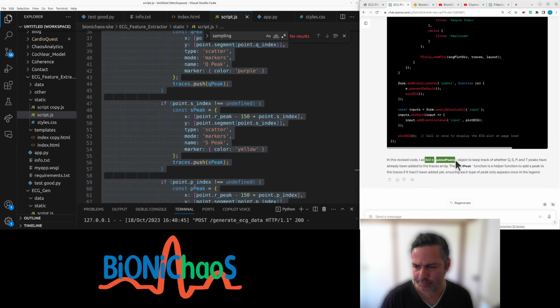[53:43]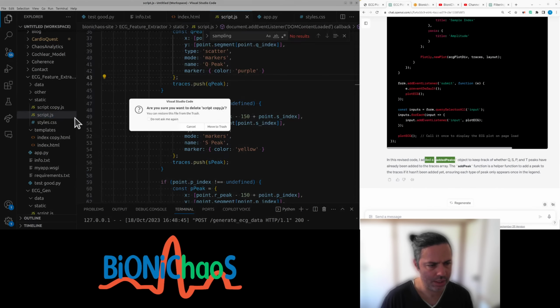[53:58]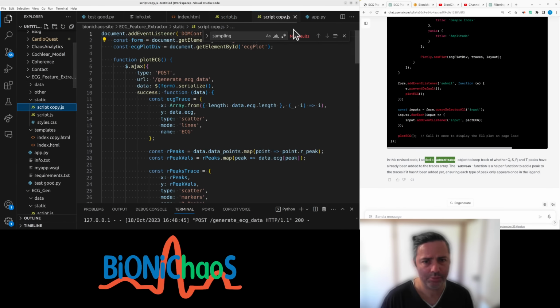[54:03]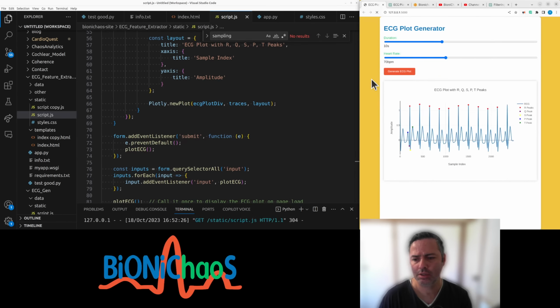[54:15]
Doesn't look like this is 100 lines of code. Yeah, it's only 83. So what was removed from my document? It's still 110. What was removed from the document? I mean, we can try it out. Can delete this one. Make a copy. Okay, so the thing is still working.
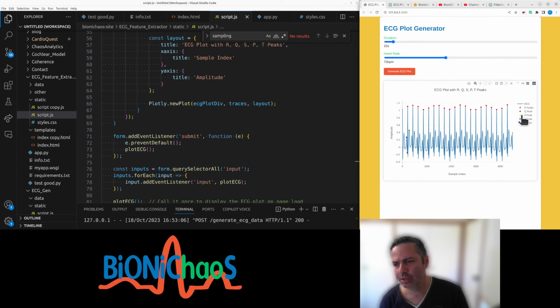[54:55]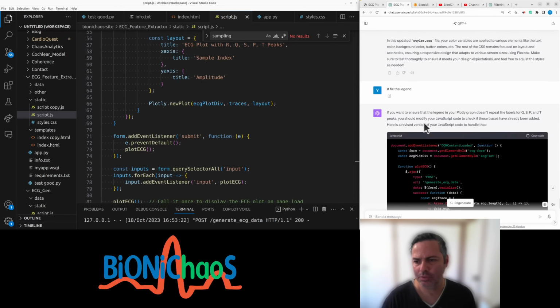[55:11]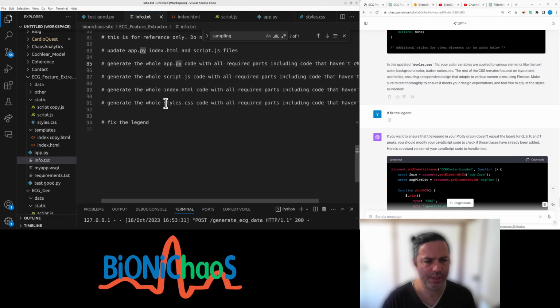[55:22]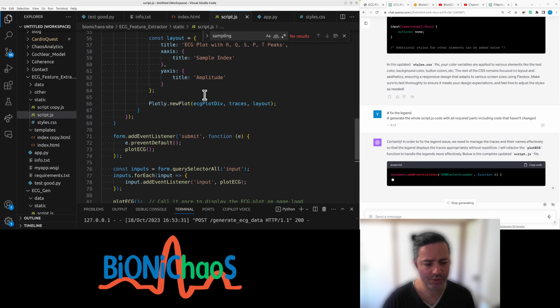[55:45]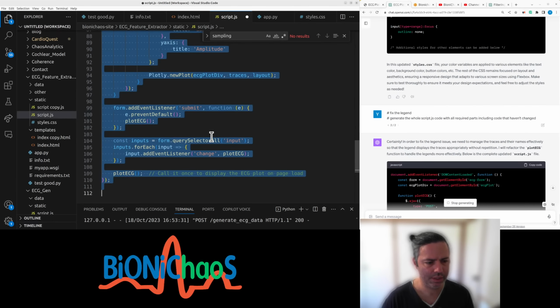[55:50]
Okay, I don't think it's duration. What on earth? That's working okay, but surely removed other stuff. What wasn't clear about? Okay, fix the legend. And generate a whole JavaScript code with all required parts, including code that haven't changed. So we want to keep the original code. I don't know why you're changing it for me. The original code had 110 lines.
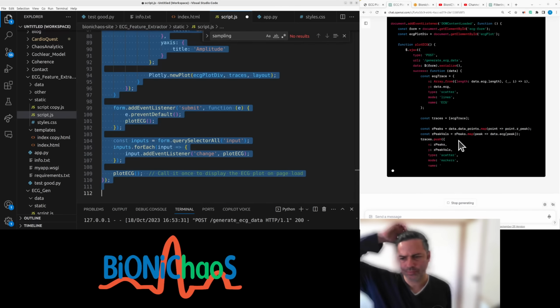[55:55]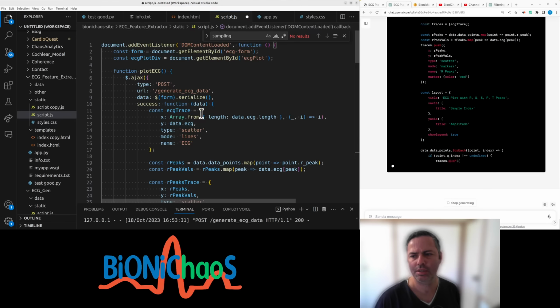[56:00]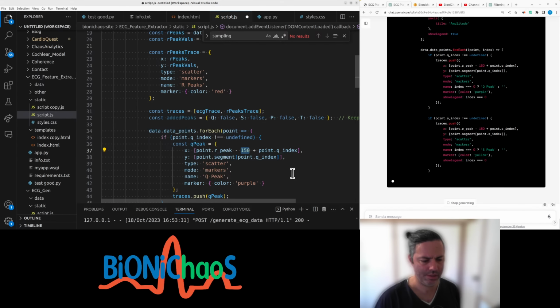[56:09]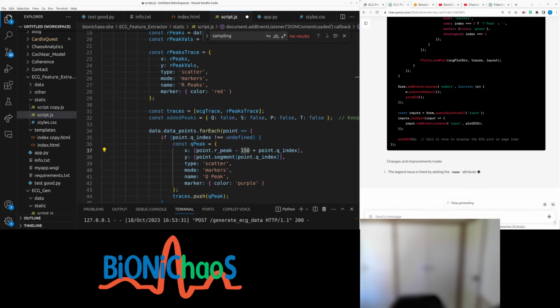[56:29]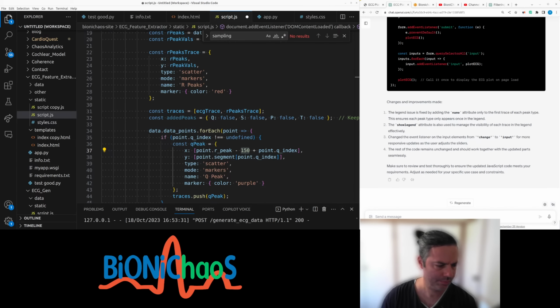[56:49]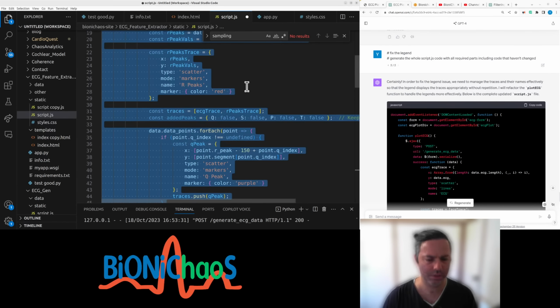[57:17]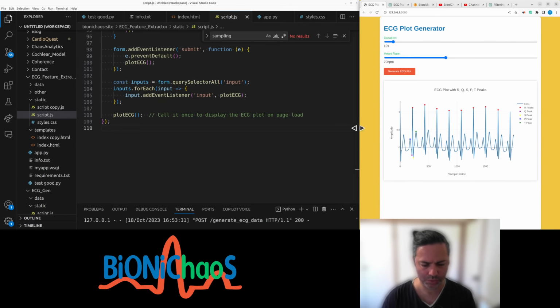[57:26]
So the legend issue was fixed by adding a name attribute only to the first trace of each peak type. Show legend, plot ECG. This looks more like it. Yeah, we want to prevent when you using the scroller, right, getting an error there.
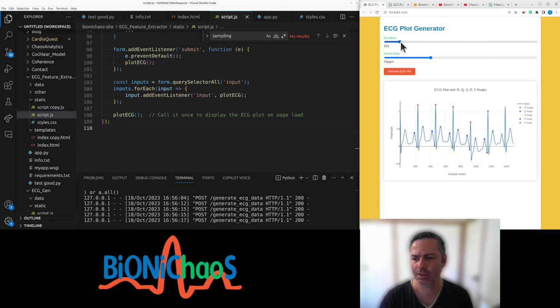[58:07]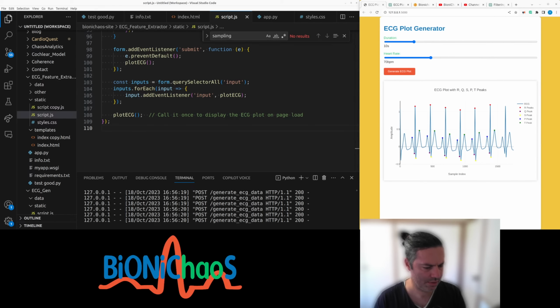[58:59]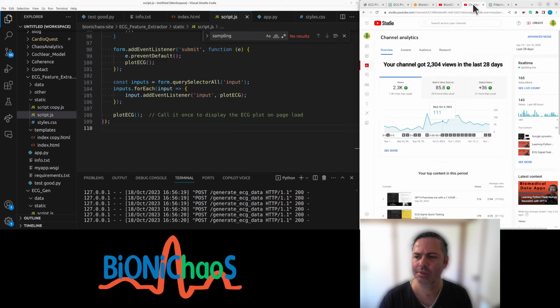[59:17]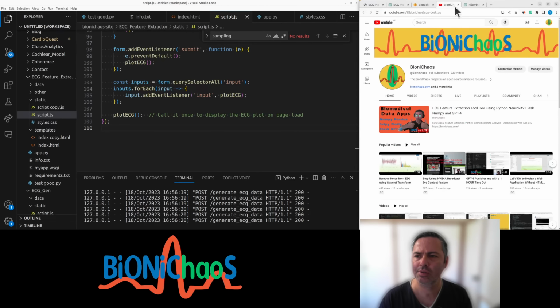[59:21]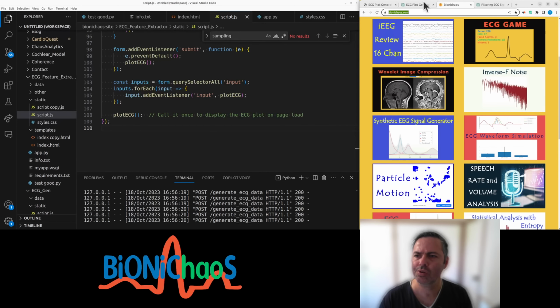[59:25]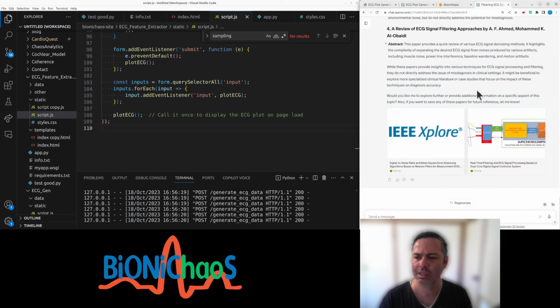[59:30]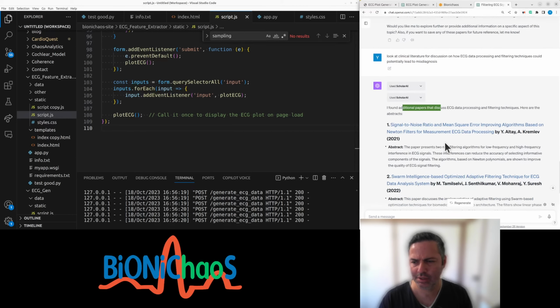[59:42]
If it did anything, found additional papers that discuss ECG data processing and filtering techniques. A signal to noise ratio and mean square error improving algorithm based on Newton filters measure. Yeah, this is not a clinical paper. Swarm intelligence. Same real time. What did I ask for? Look for clinical literature for discussion on how ECG data processing and filtering techniques could potentially lead to misdiagnosis.
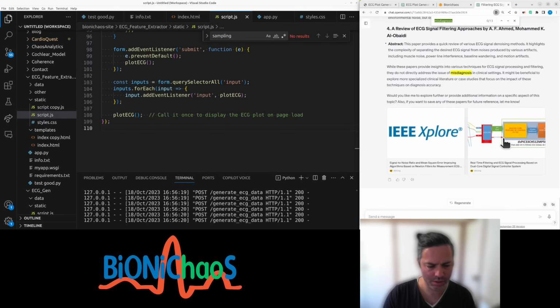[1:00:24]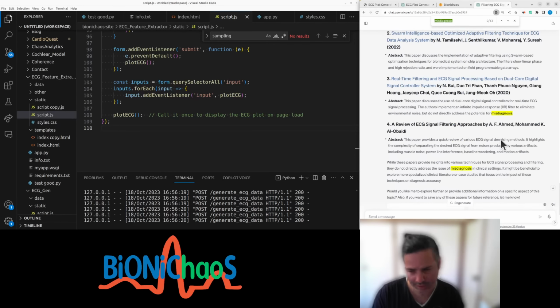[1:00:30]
And did you find anything on misdiagnosis? Yes. Do not directly address the potential misdiagnosis. Don't know. That could be an interesting thing of itself. Is that the engineering papers do not talk about misdiagnosis. I mean, yeah, we'll be talking about all sorts of problems. Yeah, can reduce accuracy for selecting informative components of the signal.
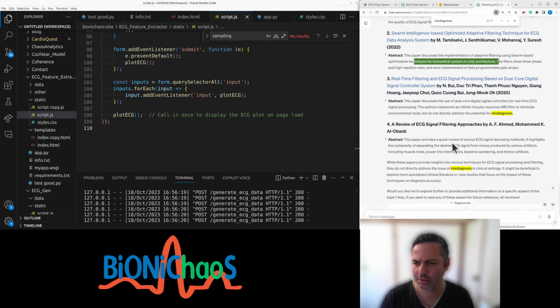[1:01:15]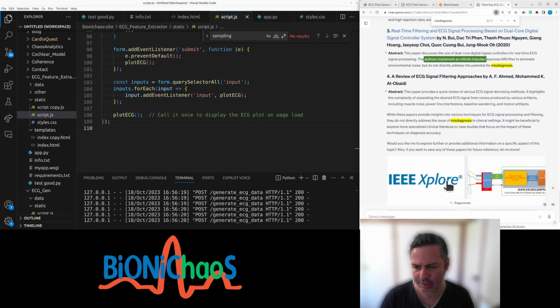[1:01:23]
Algorithms are shown to improve the quality of ECG signal filtering. Implementation of adaptive based chip architecture. Okay. Yeah, there's a lot of technical stuff. I don't know why it's
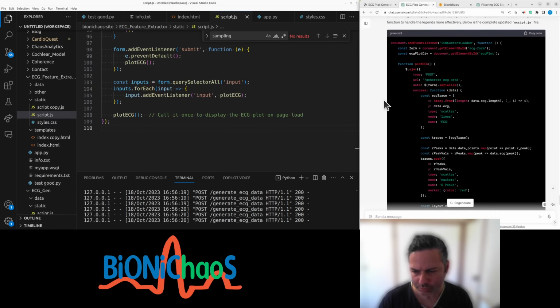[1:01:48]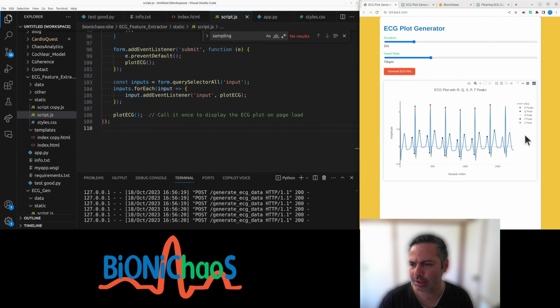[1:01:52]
Do we have access to any clinical papers? Let it do its thing. So fix the legend. It's working all right.
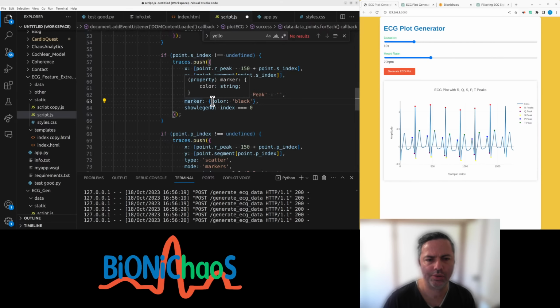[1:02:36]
Yeah, this yellow marker is not great, is it? Red, purple, blue. What other colors do we have? And the signal is blue. How about black? Actually, I want this red and the other one black.
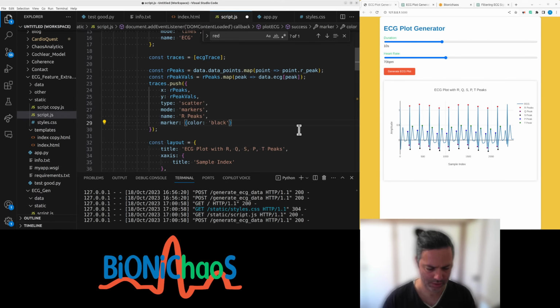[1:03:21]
Actually, one red to be blue and blue to be red. I know it sounds like I'm just messing around, but there's a reason for it. Because red would be essentially the beginning, because it's the QRSTP. So this should be in a different order. It should be PQRST, the order.
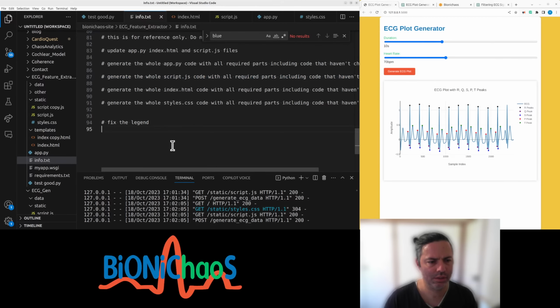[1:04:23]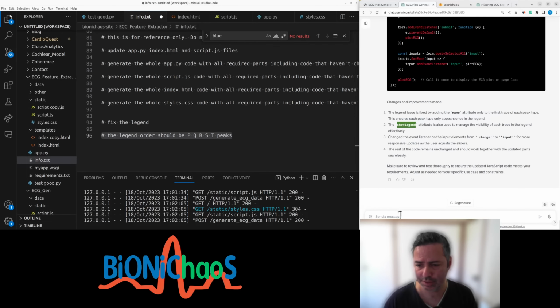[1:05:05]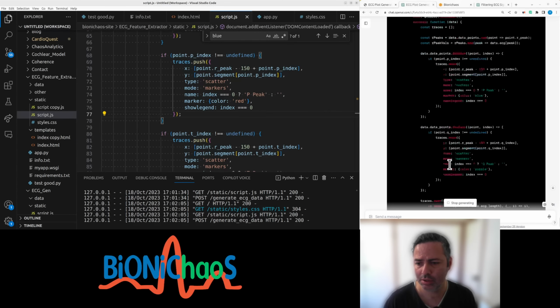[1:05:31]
So fixing the legend worked. The legend order should be PQRST. Fix. Let's see. It should be a simple fix, but we still want GPT to do this for us because I don't want to be coding anything at all. I don't know Python or JavaScript. Manage the order within JavaScript. Close the updated JavaScript file, ensuring that the legend order will be the same.
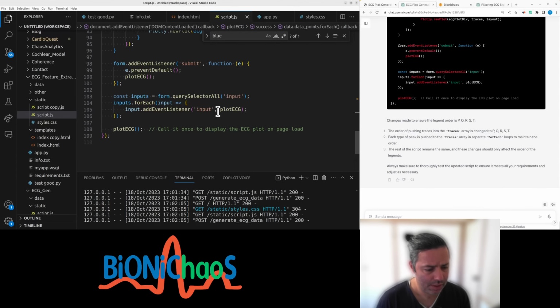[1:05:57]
So this is generating the whole thing for me, is it? Yeah, I mean, if it's writing this fast, I would not be able to integrate this fast. The problem is, we have 109 lines, so in theory, this change should result in the same number of lines or more. Okay, there is more. More is better than less. I mean, you know what I mean.
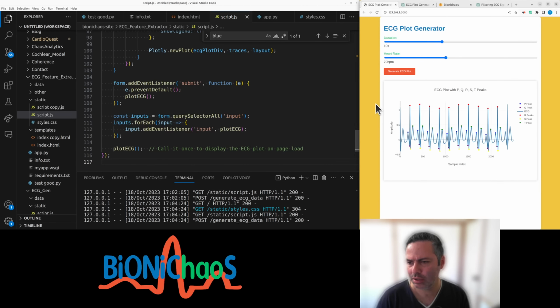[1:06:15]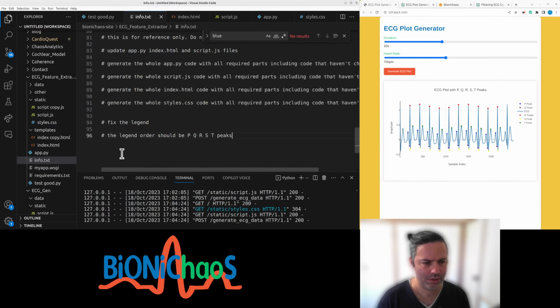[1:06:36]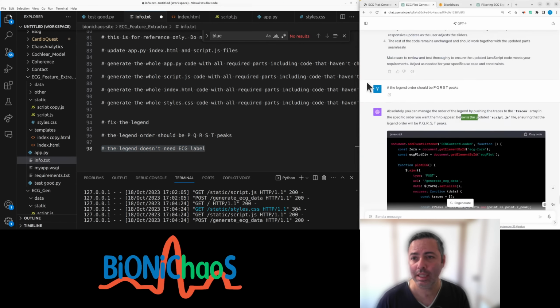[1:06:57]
PQRST. Do we really need to mention ECG? The legend doesn't need the ECG label. And again, same thing.
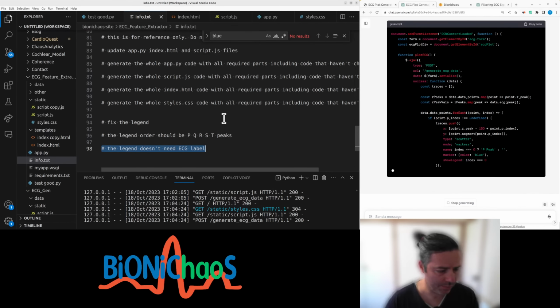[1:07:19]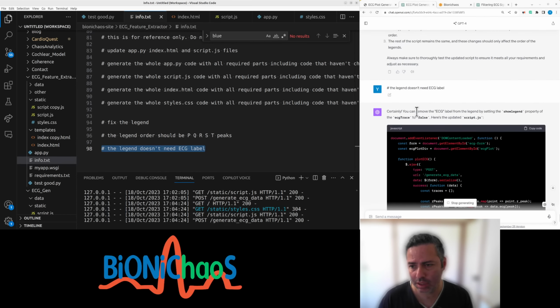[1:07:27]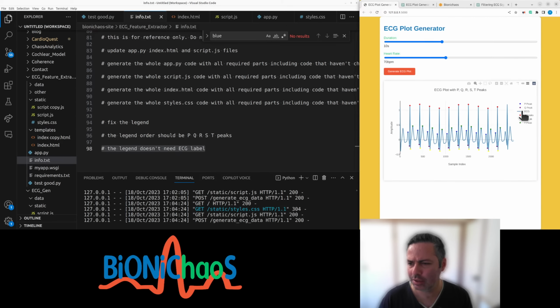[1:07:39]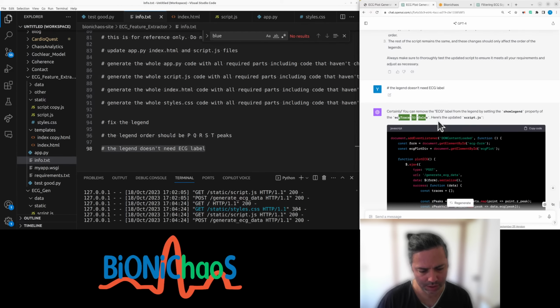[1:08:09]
The other reason for not making any manual changes is that when I do ask it to generate the whole code, it will not have this bit. So if I edit manually, it'll get removed if the bot doesn't know anything about it. Legend setting, show legend property. Would it just remove the whole thing? Yeah, so this kind of weird double clicky thing. If I do a single click, it just removes the ECG, and I think that's what it's gonna do, which is not what I wanted.
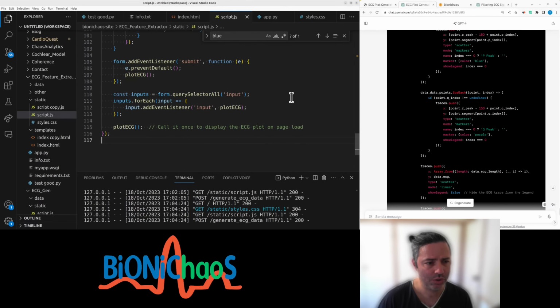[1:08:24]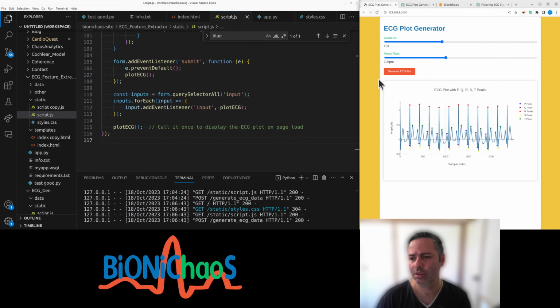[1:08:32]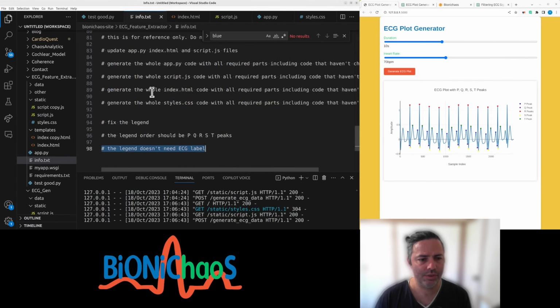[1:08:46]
Label from the legend by setting show legend property of the ECG trace to false. Yeah, it's now generating the whole lot. 116. Right, PQRST. Didn't we just change the color? Yeah, so that's what I was talking about. It will stuff things up, so we actually have to mention it here, which is probably good practice anyway, because we'll have a list of requirements, and it is kind of important.
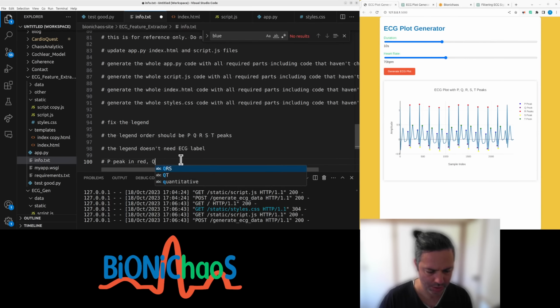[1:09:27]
So we want P peak in red, Q in purple is okay, R in black. The reason being is because it stands out already. S in blue, T in green.
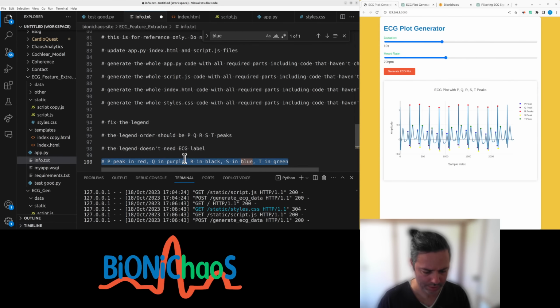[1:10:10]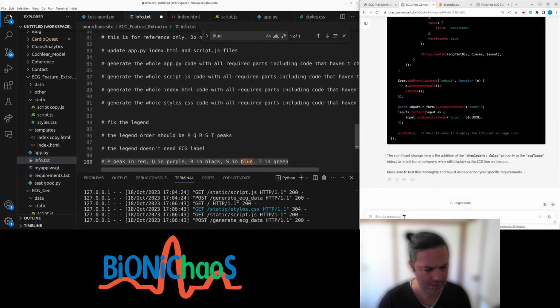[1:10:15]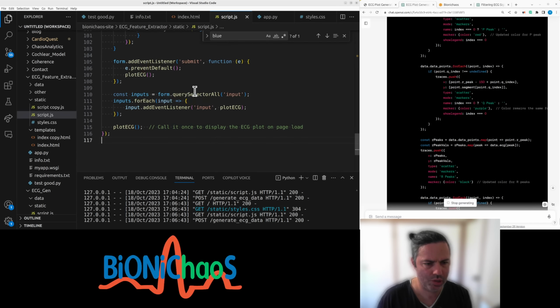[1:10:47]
I'm surprised I'm not yet exceeding the 50 prompts per 3-hour limit. I used to hit that limit all the time. Changing the color attribute inside the marker property of each specific peak, and it's doing this for me, which is great. This is obviously the JavaScript that's generating the whole code again, and I would expect it to be the same length, so 116 lines of code, including empty lines, roughly the same.
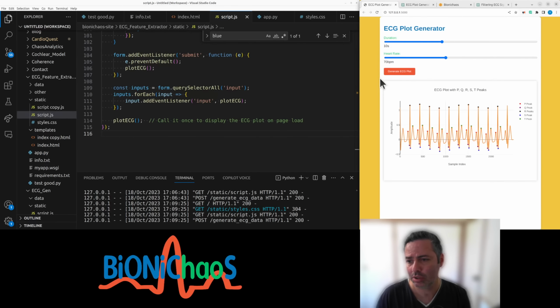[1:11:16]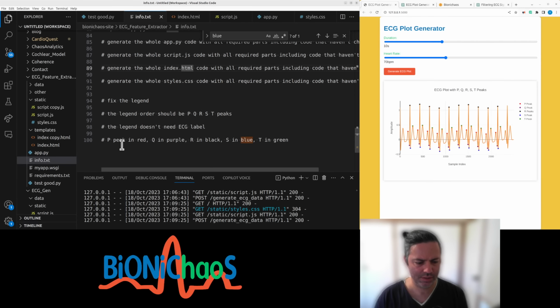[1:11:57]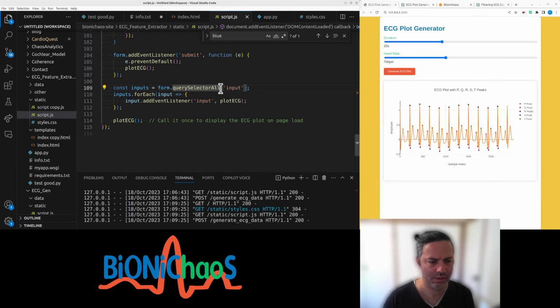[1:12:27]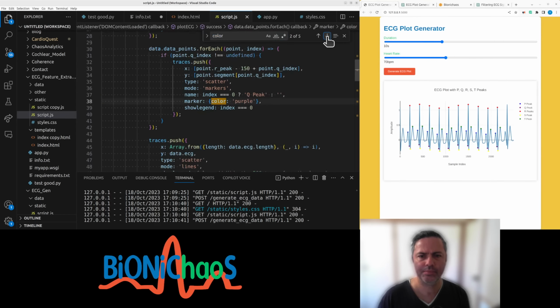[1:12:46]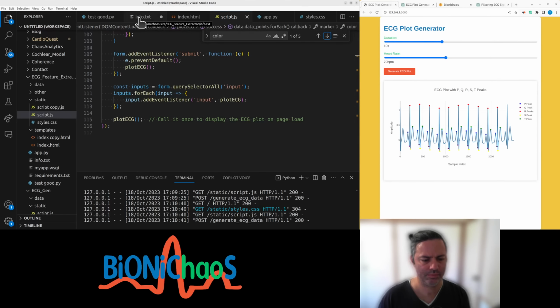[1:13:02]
Okay, where's that orange come from? Really? It's messing up quite a few things. ECG trace, in what color was it? It's actually a different blue, isn't it? Where's that orange coming from?
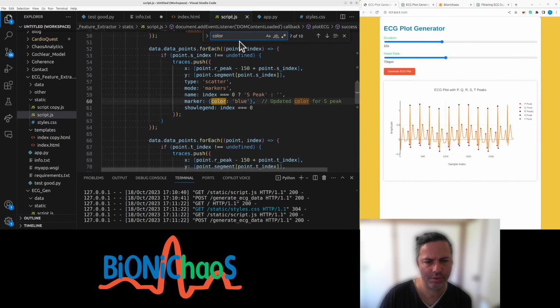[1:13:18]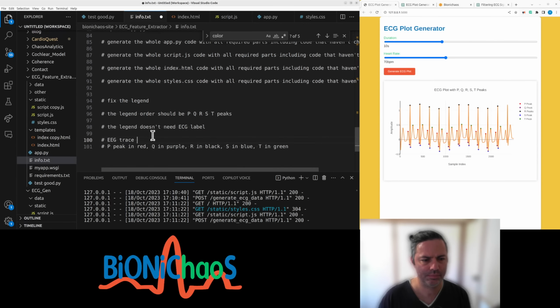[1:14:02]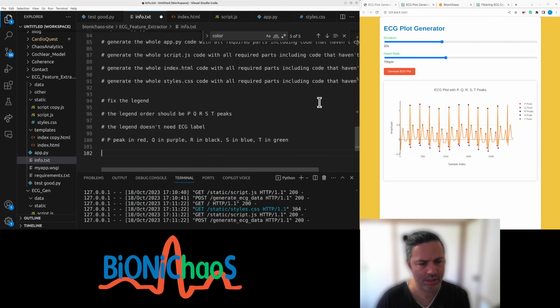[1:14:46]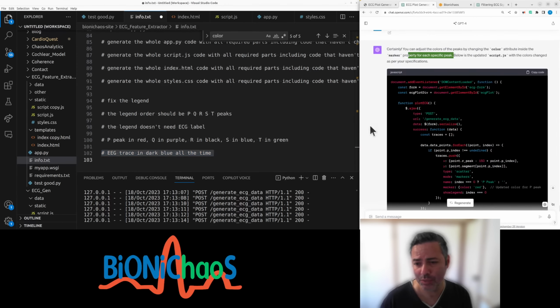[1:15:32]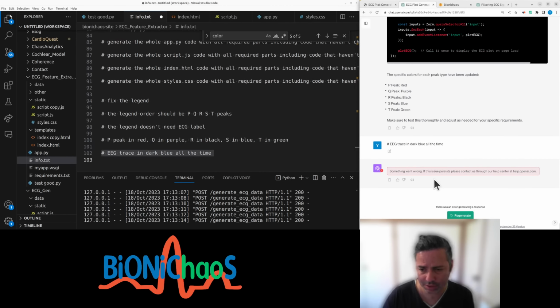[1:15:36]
Right, no, actually the colors are correct now. ECG trace, set default. Yeah, doesn't matter, we'll leave it for now. There's other things. Oh, what's up in the color business? Okay, we just need to fix it. The ECG trace. Oh, in dark blue all the time. Yeah, we'll do it one by one. Quickly. No, something went wrong. Something went wrong. No, now it's generating.
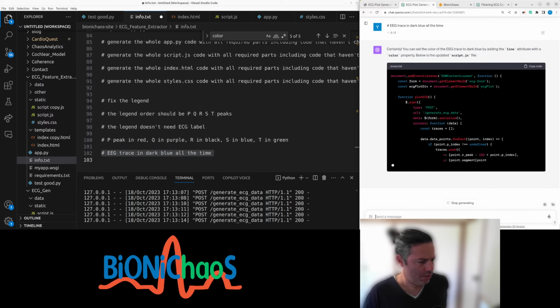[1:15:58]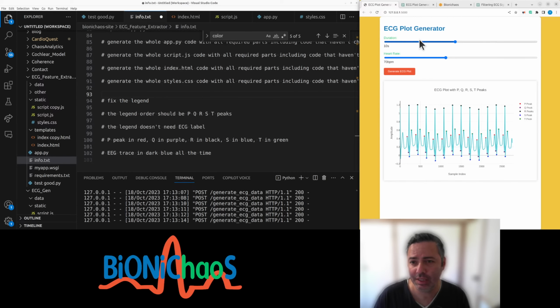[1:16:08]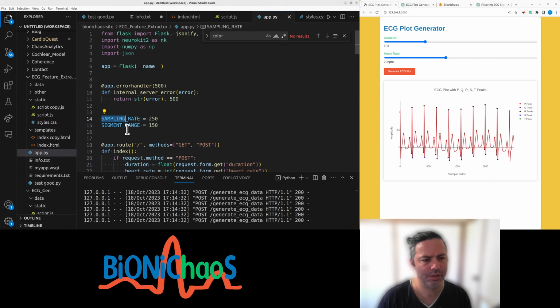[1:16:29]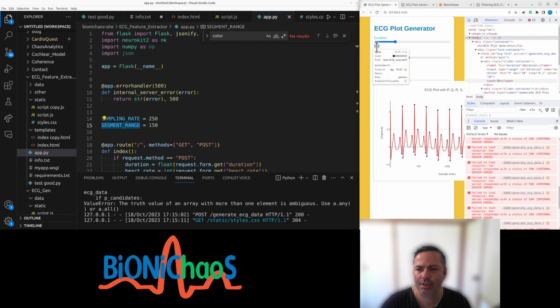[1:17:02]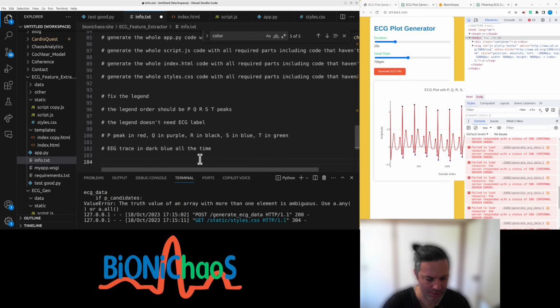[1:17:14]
Next thing, when we change the input parameters, well, first we need another input parameter, which is that, what's called, sorry, yeah, the segment range. We should be able to change it slightly. We need those. Should see the, what are they called? Spans to display the actual value. Spans next to the input slider display actual current value.
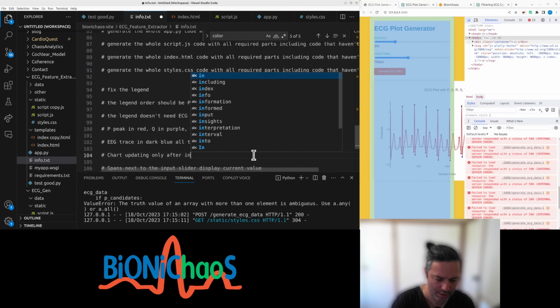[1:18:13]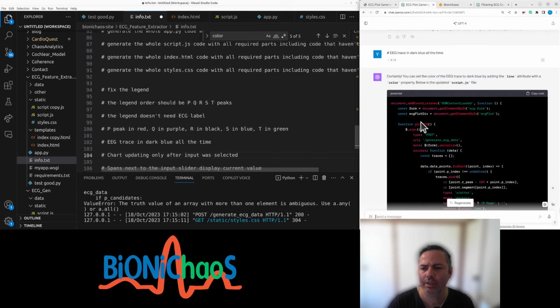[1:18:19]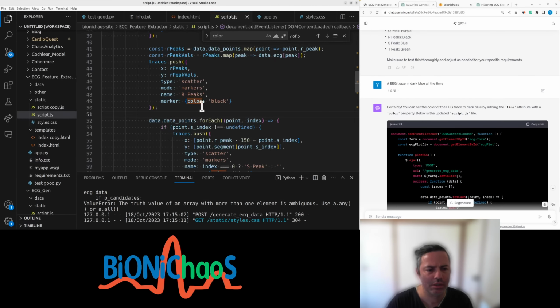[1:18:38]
What else? Inputs. Chart updating only after input was selected. Line property edit color attribute dark blue. And this is the whole JavaScript code, is it? So we have 115 lines. Yep.
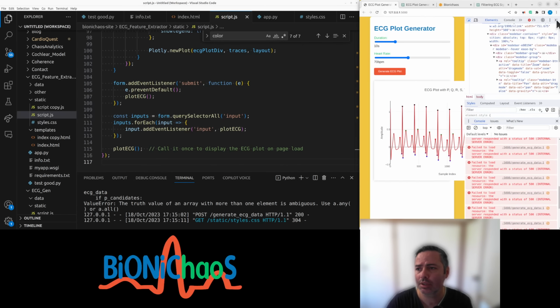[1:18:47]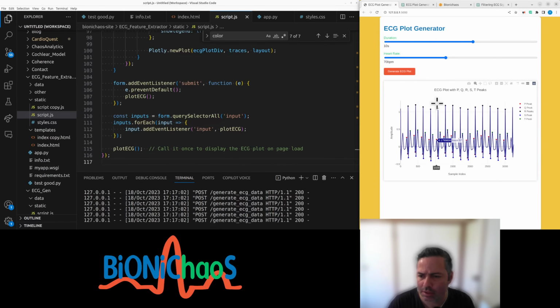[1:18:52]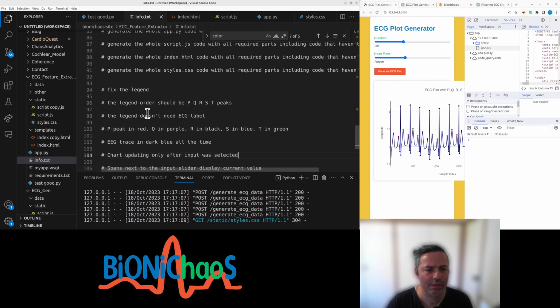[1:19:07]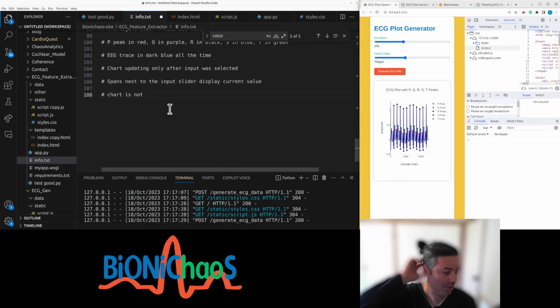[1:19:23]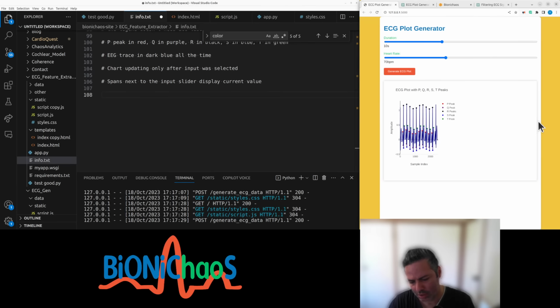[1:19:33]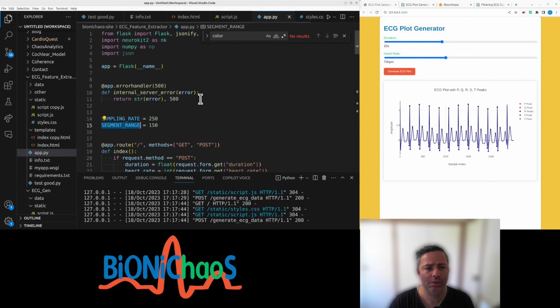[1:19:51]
Let's see. Can close this for now. Dark blue is not pretty at all. Right. Yeah, the chart is not properly scaling. Wait. No, it is scaling. No, it's okay. If you want to scale when the window is resizing, it will then tell me to change the JavaScript, and that's okay. Just have to hit refresh. Otherwise, it just becomes too complicated. Now I need another input, which is that segment range. Yes, sampling rate just remains fixed.
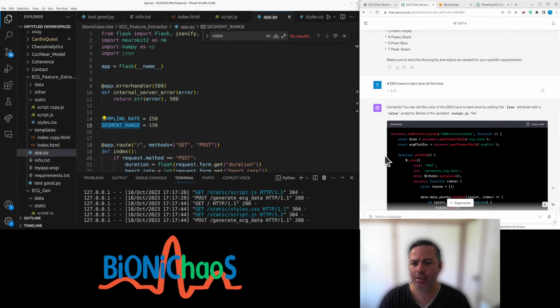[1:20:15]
So this is actually not segment range. This is a bad description for it. Segment range, I don't know why it's all capital letters, but segment range variable in the Python code snippet. This variable is used to determine the range of ECG signal segment that will be displayed around each R peak. It defines how many data points before and after the R peak will be included in the segment. You can change the value of segment range in the Python code if it's not clear enough. Blah blah.
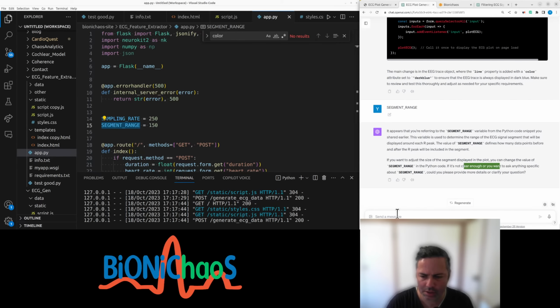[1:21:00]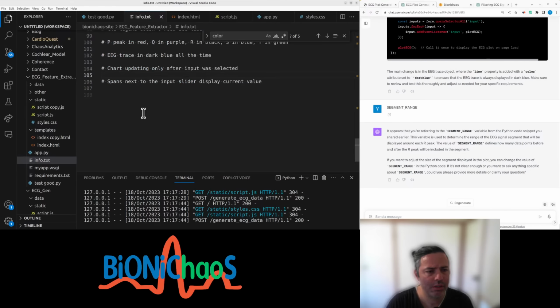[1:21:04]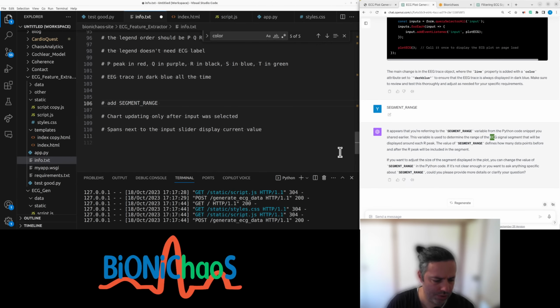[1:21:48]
Okay, so we did all that. This will go first. Add a segment range as input slider on front page. After input values were selected, current value. Let's try all of them. No, wait, we can't. Let's do one at a time.
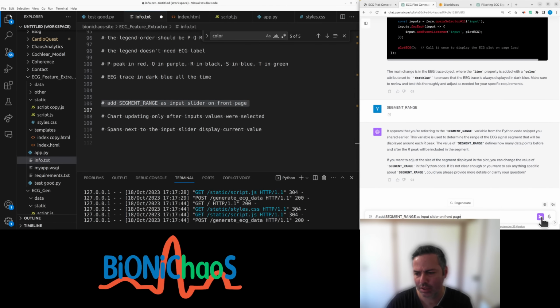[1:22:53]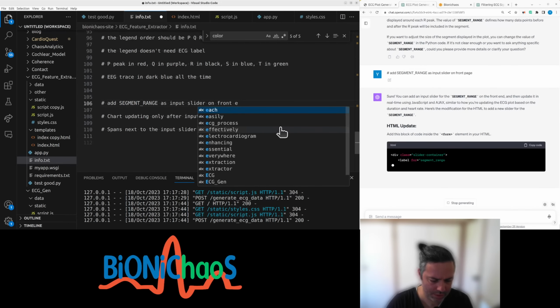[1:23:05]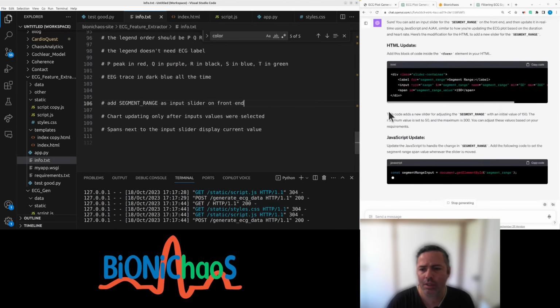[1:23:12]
So, and then another input, front end. Keep using front page because I used to LabVIEW. This is not LabVIEW, is it? HTML update, JavaScript update. This looks legit. Let's do this as well.
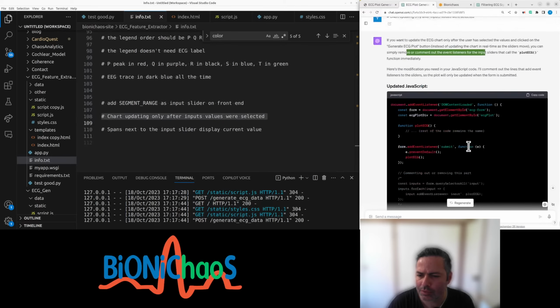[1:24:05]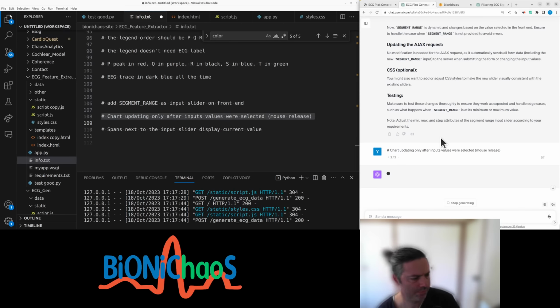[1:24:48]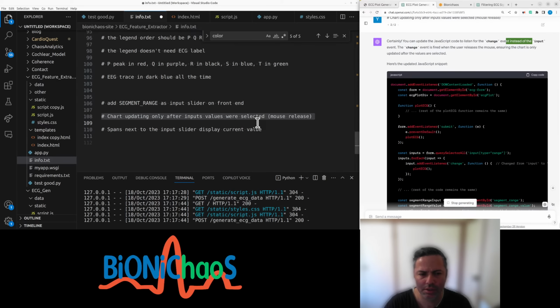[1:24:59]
Chart updating only after input values are selected. If you want to update the ECG chart only after values are clicked on the generate button, instead of updating the chart in real time as the slider moves, you can simply remove or comment out the event listener. The event listener that is previously attached to the input called plot ECG immediately upon the change. The plot will now only update when the form is submitted. No, that's not what I meant. Chart updating only after it's a mouse release. Never mind. You can update the JavaScript to change instead of input. Okay, yeah, that's right. And that should be correct.
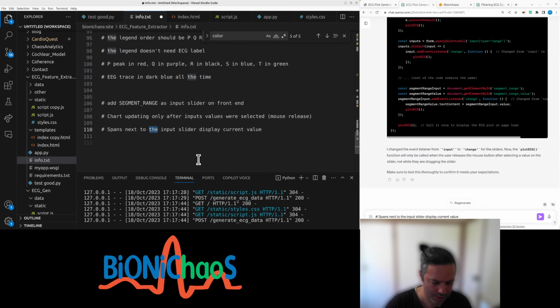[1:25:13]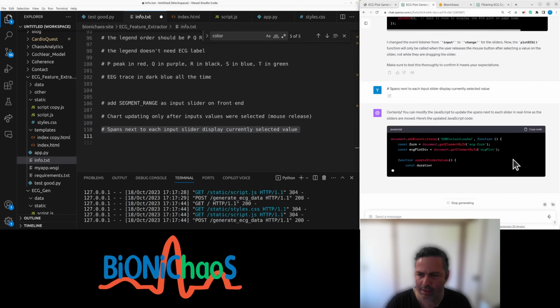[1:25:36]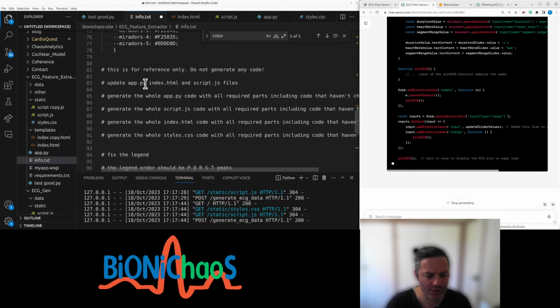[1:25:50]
And another change is spans next to each input slider display current selected value. Let's see what it does. It should make sense. Next to each slider, blah blah. Okay, it seems to be doing that. Okay, it's generating incomplete code.
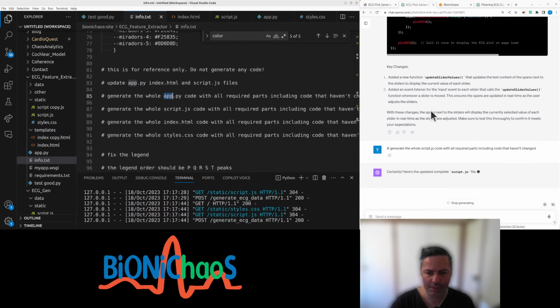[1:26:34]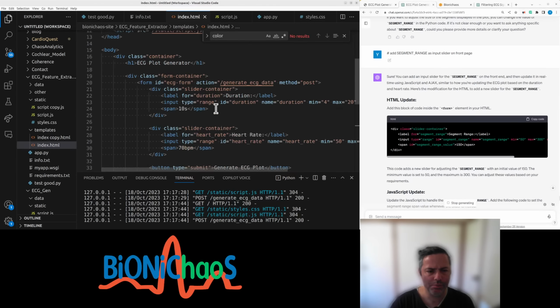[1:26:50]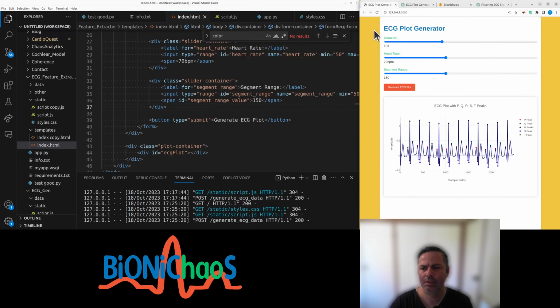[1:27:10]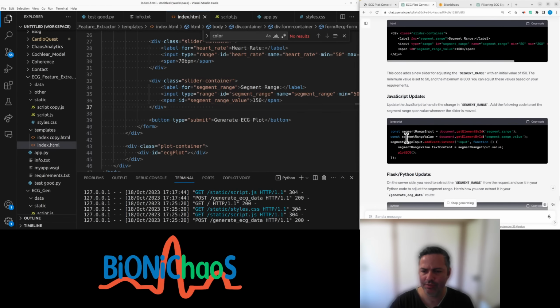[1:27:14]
Okay, let's generate. Most of the change was to JavaScript. Let's generate the whole JavaScript, making sure there are no missing bits. And we can probably try updating Python, HTML. Let's update HTML. Let's pop it in here. Right, segment range 150. Python. We only have two functions. Generate ECG data: duration, heart rate, segment range. Getting this from a form. Don't need that comment. Right.
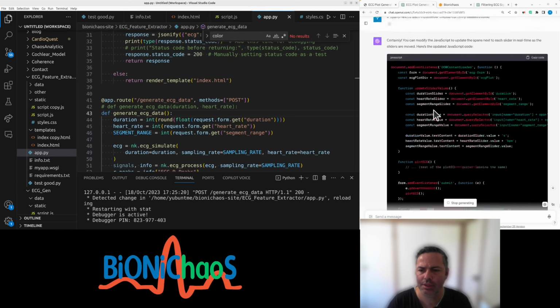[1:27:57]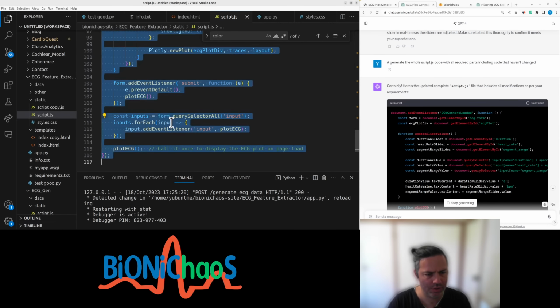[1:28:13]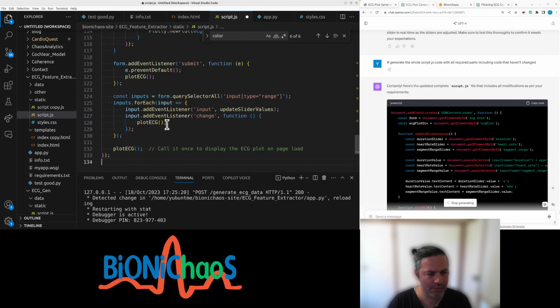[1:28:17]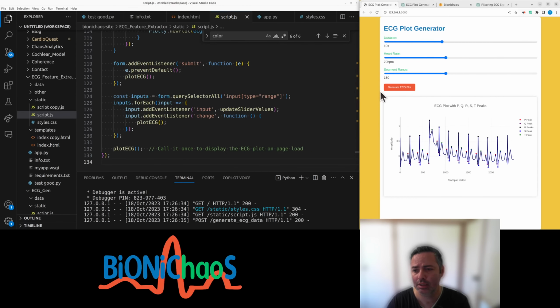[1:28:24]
And it's JavaScript. This should be the whole JavaScript, making sure there's no placeholders. It should be the same length. Shouldn't be shorter than 116 lines. Right, it's like 133. Which probably means... Ooh.
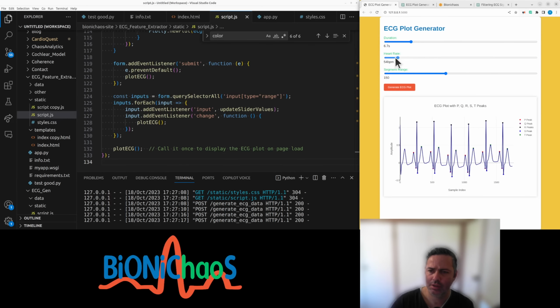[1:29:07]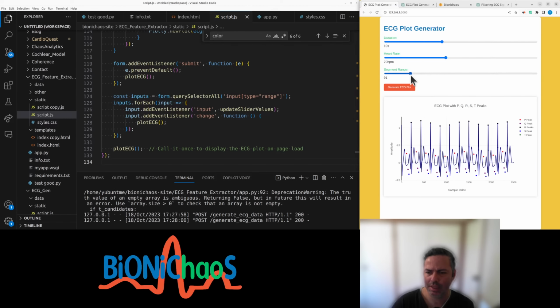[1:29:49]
Okay, so duration works. It's minimum at 4 seconds, maximum at 20 seconds. Default is 10. Probably 5 will be better, but doesn't matter. Now, heart rate from 50 all the way to 100, which is why 100 seemed to be too much. Why? But it does make sense. Now, okay, this just makes it off by miles.
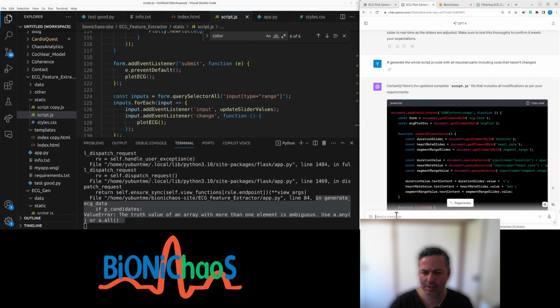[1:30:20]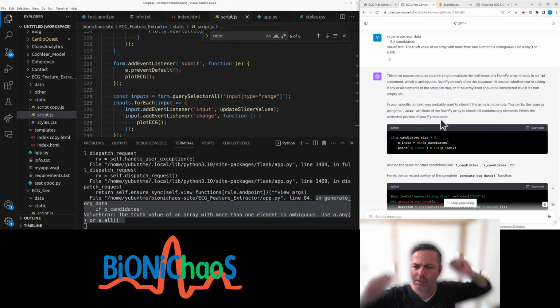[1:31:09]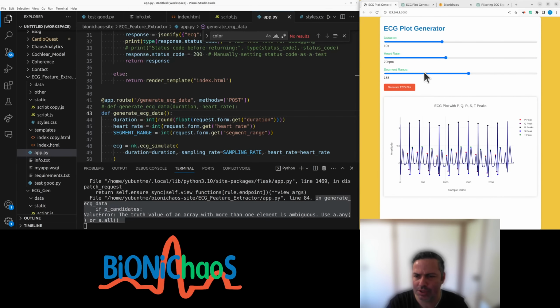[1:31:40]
What does this error even mean? Why do they have more than one element? Oops. The error occurs because it's trying to evaluate the truth value of the numpy array directly, which is ambiguous. What? Your Python code only has a minimum value of 0, which makes sense. Peak candidates. The main question is, yeah, we have to get rid of it because essentially it works with 150.
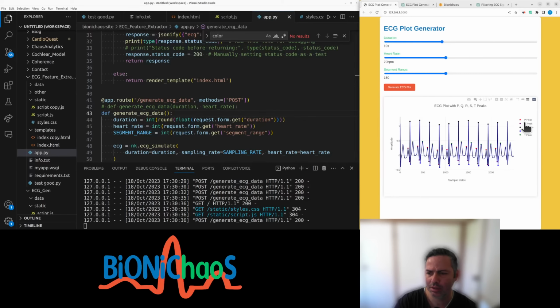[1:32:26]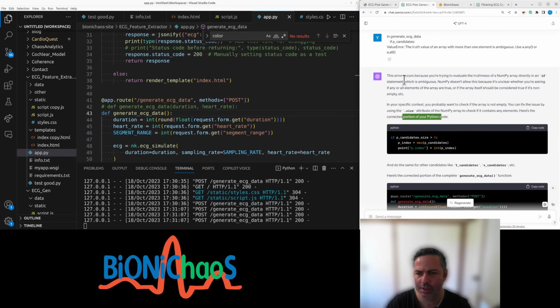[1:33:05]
Just hitting F5 to refresh the page. Right, this will generate some variability. Yeah, it's just off. It actually was nice when we had the ECG signal, because you could click on it and it would show you just the labels only. But yeah, this is pretty good. I think it's pretty useful. Not sure about that error. I know the array is not empty. Why would it be empty?
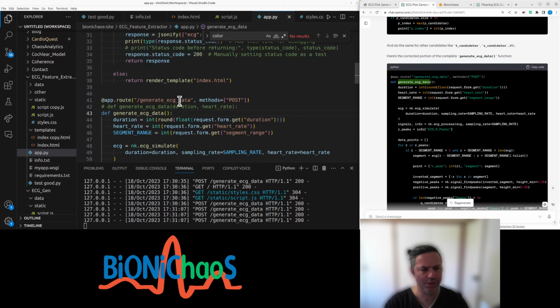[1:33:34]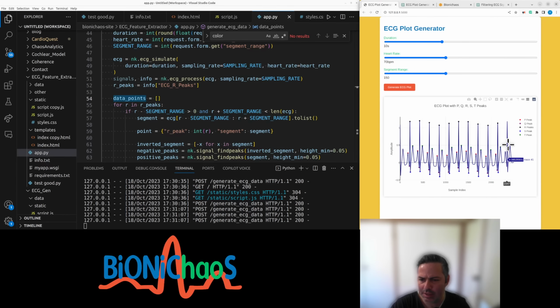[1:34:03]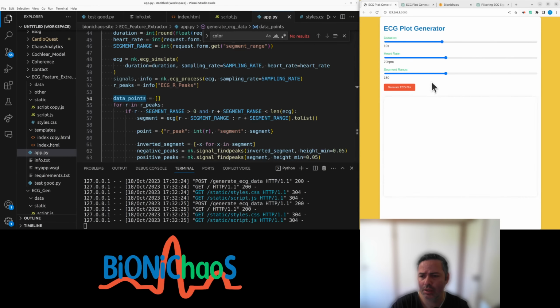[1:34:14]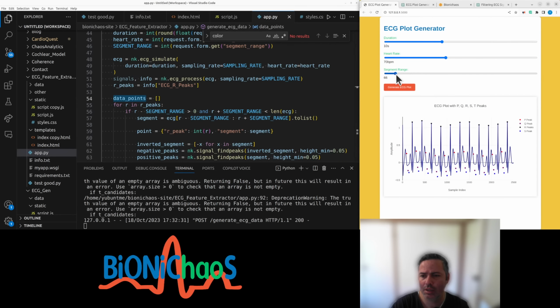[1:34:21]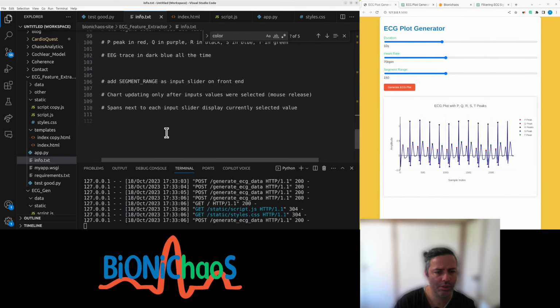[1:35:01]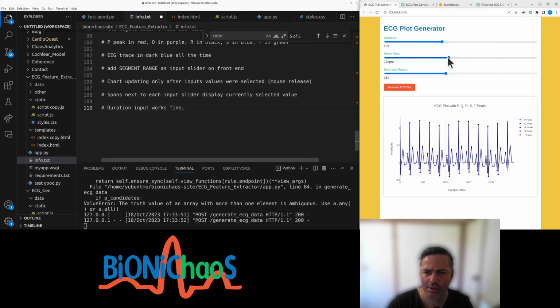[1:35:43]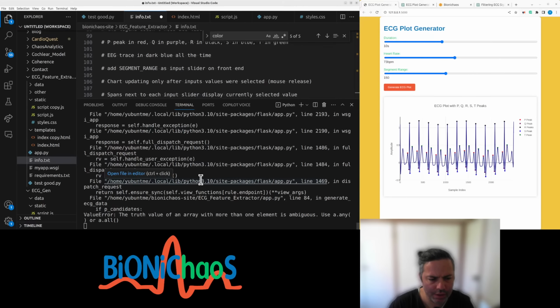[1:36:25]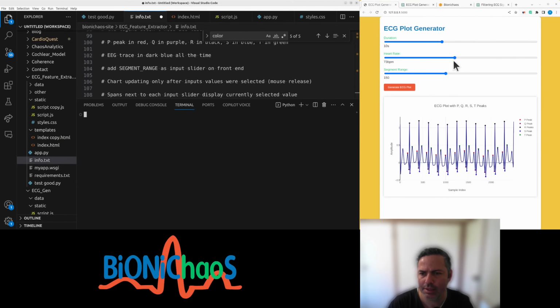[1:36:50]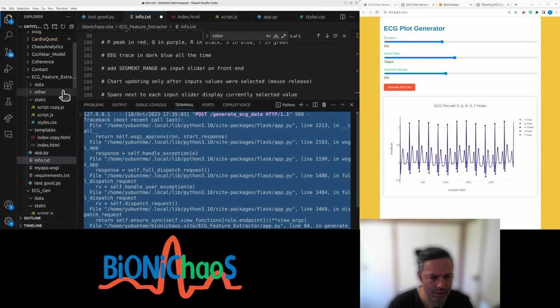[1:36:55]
Now there's a problem. So duration input works fine. A heart rate input above 73 BPM will result in this weird error. Okay, let's just clear this, regenerate this whole lot.
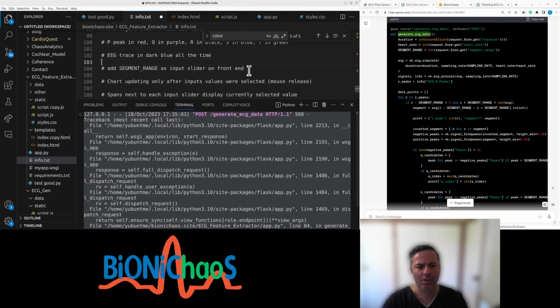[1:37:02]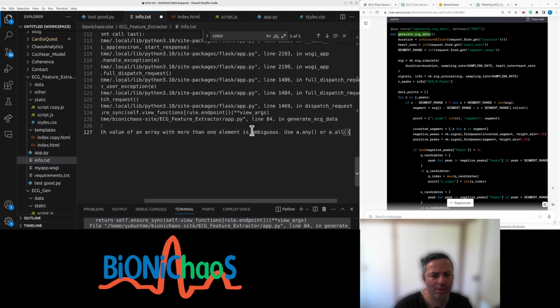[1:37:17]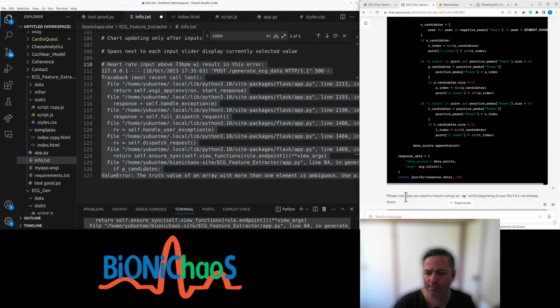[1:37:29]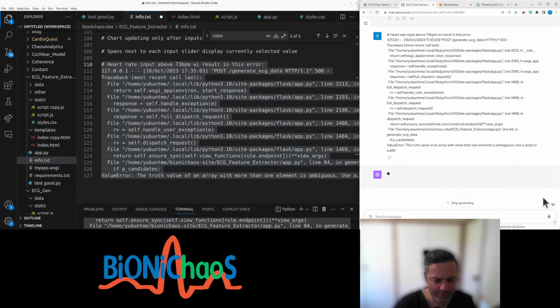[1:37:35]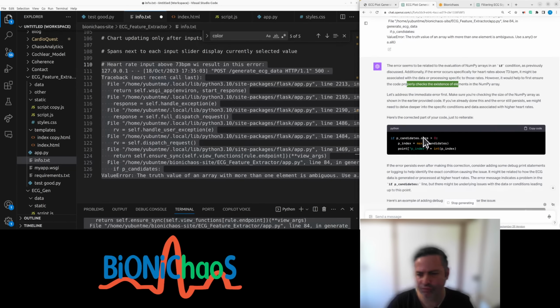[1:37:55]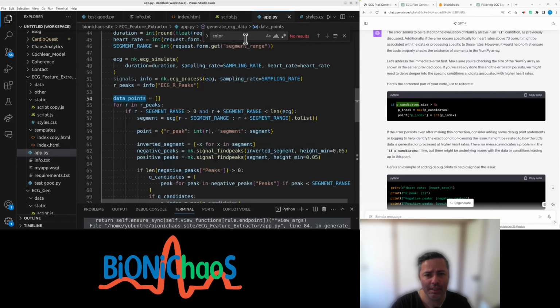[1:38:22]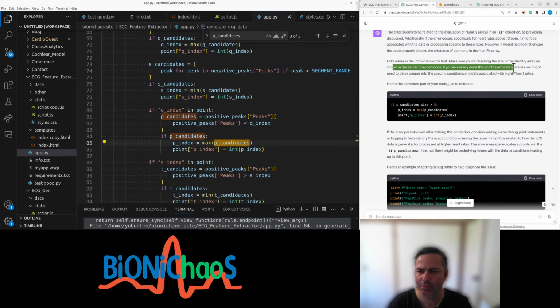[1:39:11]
I don't know what's up. See if it can solve it. I think this is wrong. P, do I even have P candidates? Yes. Does it mean there are too many of them? P index max. Here's the correct. Make sure you're checking the size as shown in the earlier provided code. If you've already done this and the error still persists, you might need to delve deeper and use the corrected part of your code. Do I need to do it everywhere?
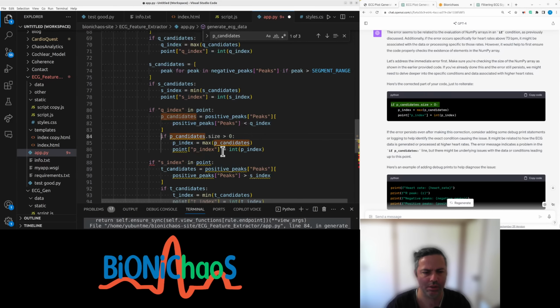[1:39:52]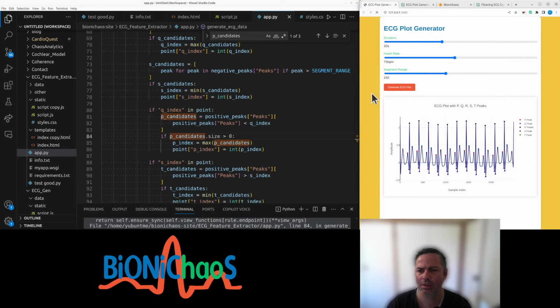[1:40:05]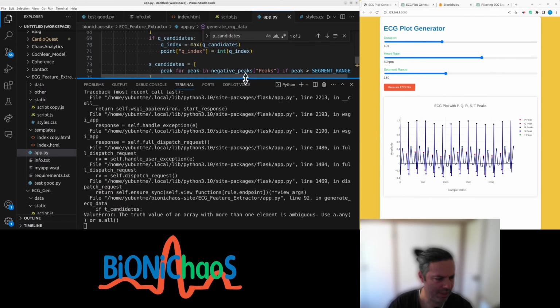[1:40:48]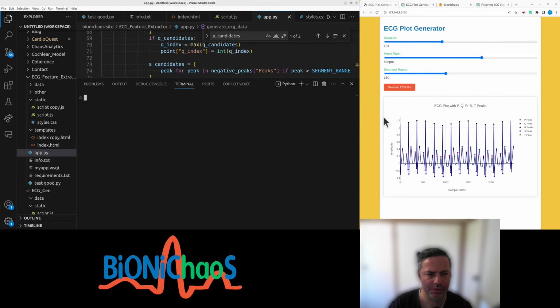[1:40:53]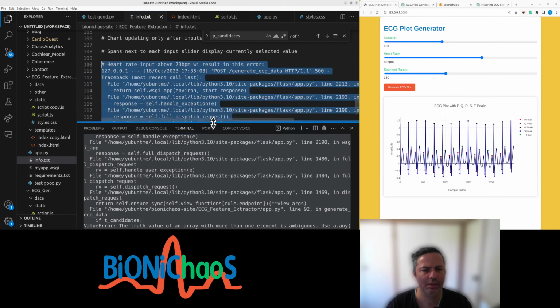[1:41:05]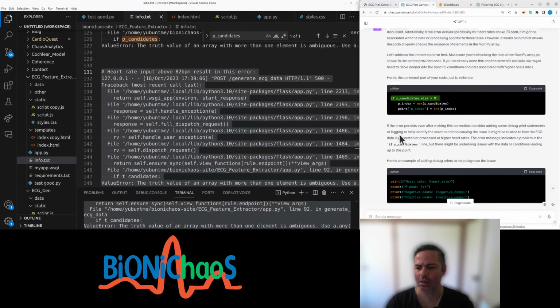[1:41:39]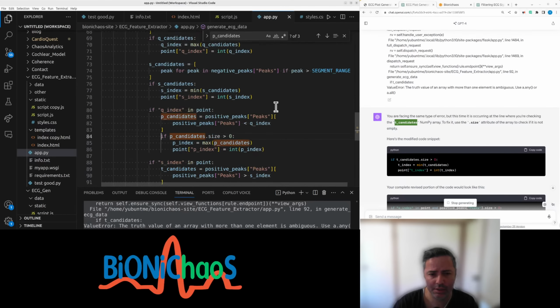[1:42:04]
It's this 75, 26, 27, 79. It's really bizarre. Clear. Oops. That's doing the same. But above 82. Red team, but above. Above 82. Right, it's doing the same for T candidates. Don't really get it. I mean, it can make sense because it's
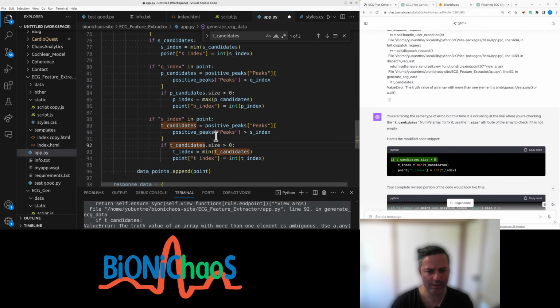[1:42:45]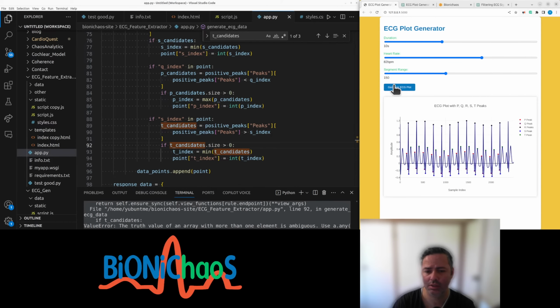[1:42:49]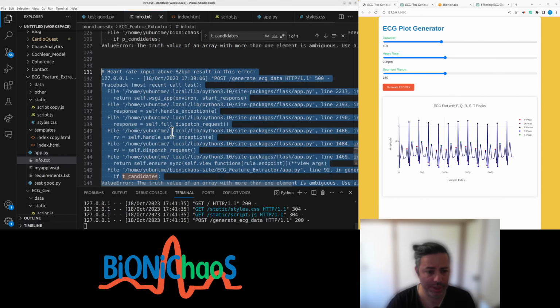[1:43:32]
Candidates, is size, a clear. Okay, so heart rate goes all the way to, sorry, I shouldn't laugh, 100 if 50 is minimum, 70 is default, and segment type just stuffs up the calculation. It's pretty good, pretty impressed.
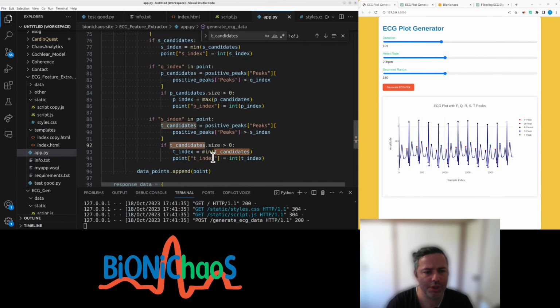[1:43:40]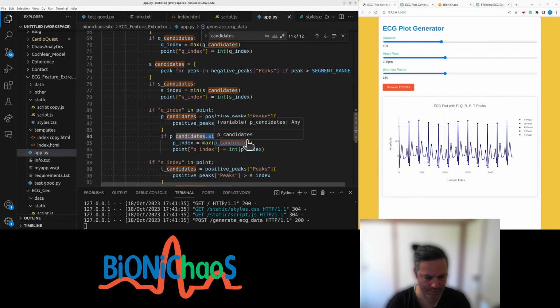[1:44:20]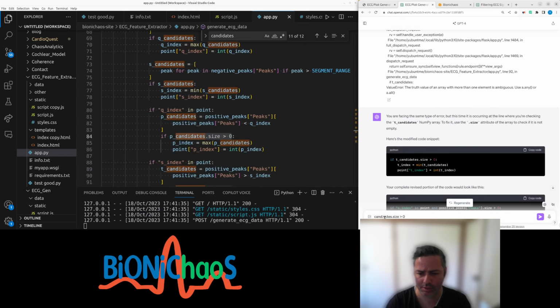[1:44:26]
Do we need to check so any candidates if candidates. Silly question. Do all, if candidates should be, if candidate size above 0.
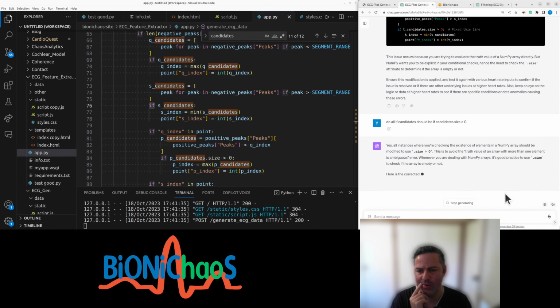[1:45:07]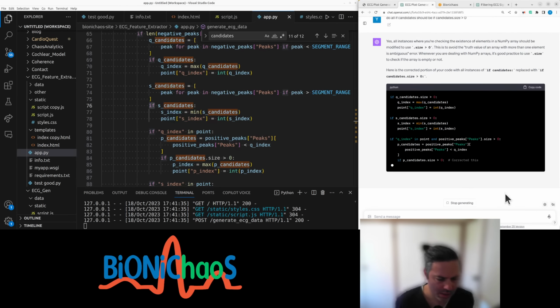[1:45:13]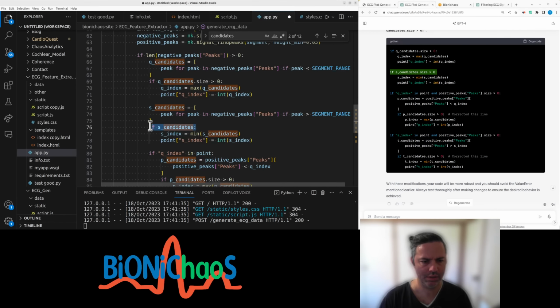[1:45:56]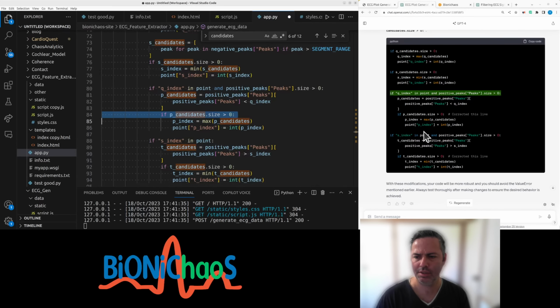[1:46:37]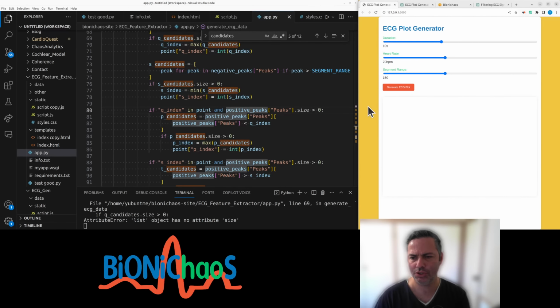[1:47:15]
Right. If Q candidates, if S candidates, if P candidates we already did that. S index and positive peaks size is above 0. If T candidates, so all of candidates, double check.
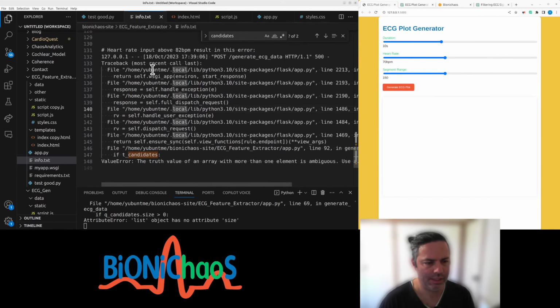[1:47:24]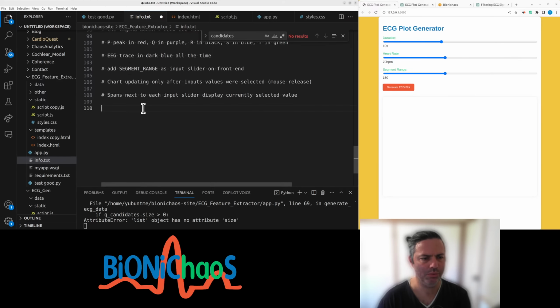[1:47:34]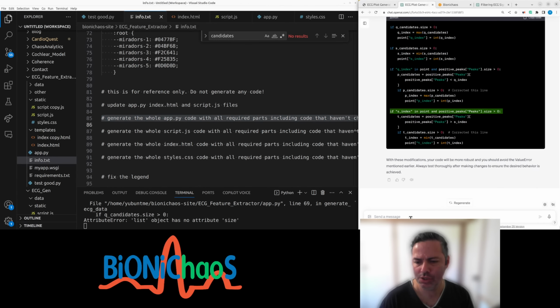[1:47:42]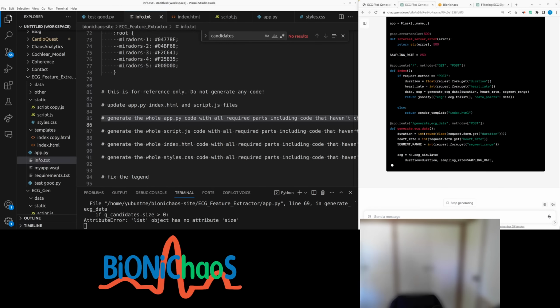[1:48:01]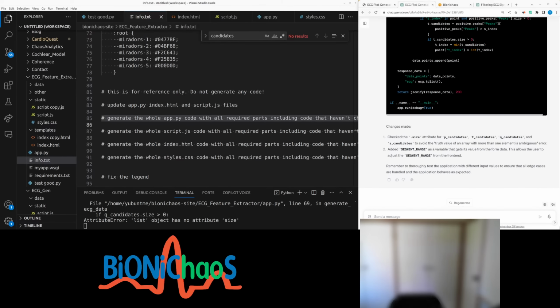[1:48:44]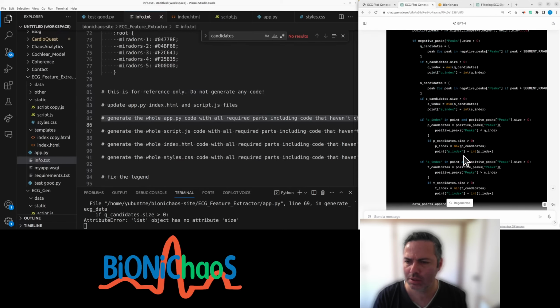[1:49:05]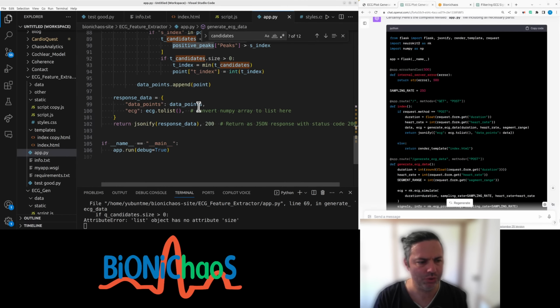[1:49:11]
Okay, we can integrate. We can remove those, that the error should go away. Can we generate the whole Python script? Okay, that looks too short. We have 106 lines of code. Oh, no, no, no.
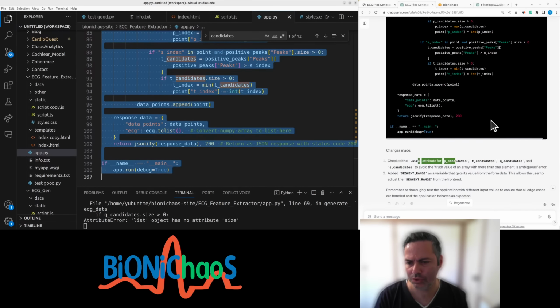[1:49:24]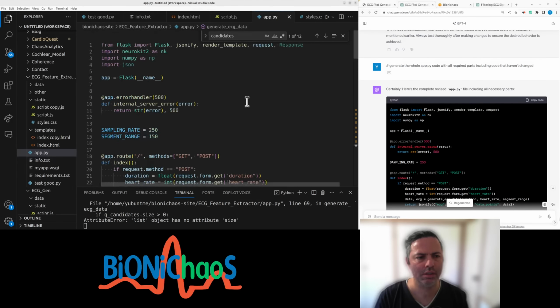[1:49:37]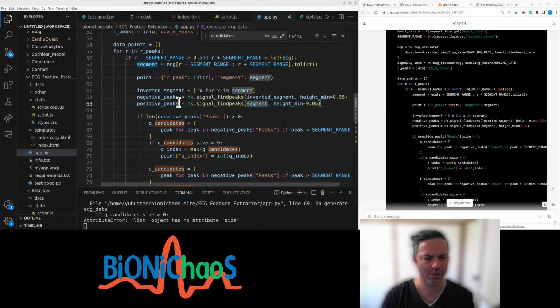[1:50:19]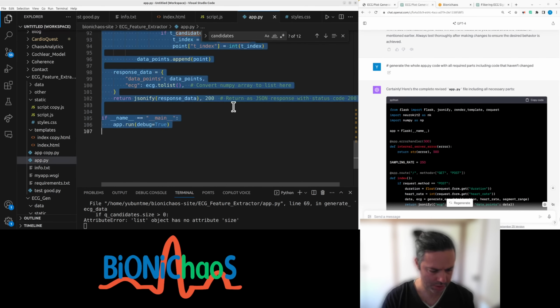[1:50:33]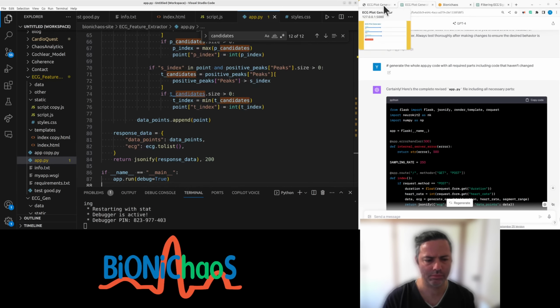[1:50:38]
Is there any templates? That makes sense. Don't have the print statements anymore. Then give it a shot. Yeah, just make a copy of it just in case it's suspiciously shorter. Okay.
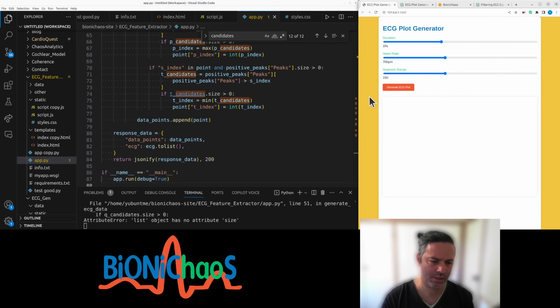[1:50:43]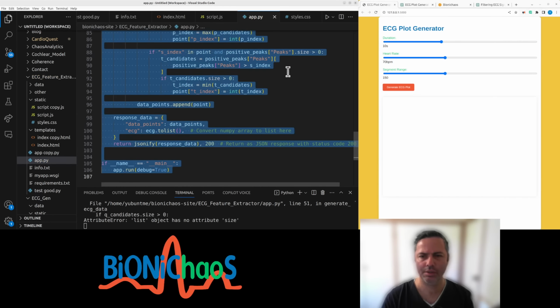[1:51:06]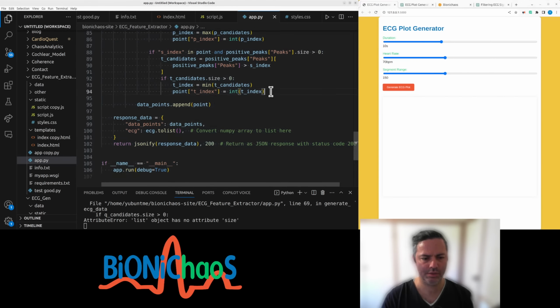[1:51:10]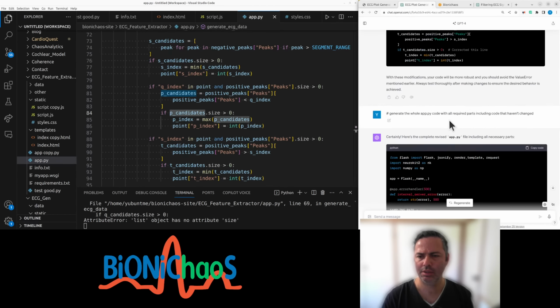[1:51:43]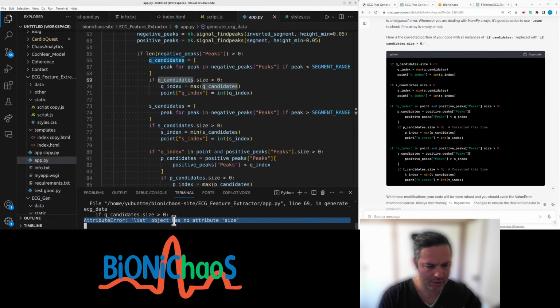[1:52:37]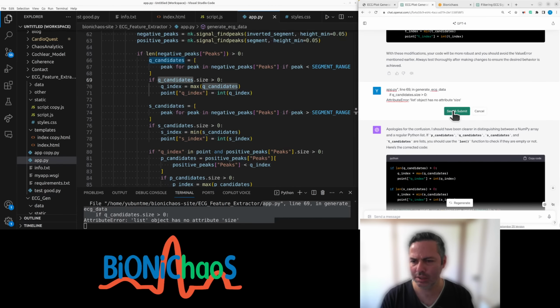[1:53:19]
A Q candidate doesn't have an object size. Why does a Q candidates, it doesn't have size? Wait. Line 69. Should have been clear distinction between Numpy array and a regular Python list. Should use a length function. Just 1 sec. Let's give it the whole error. Let's see if it says the same.
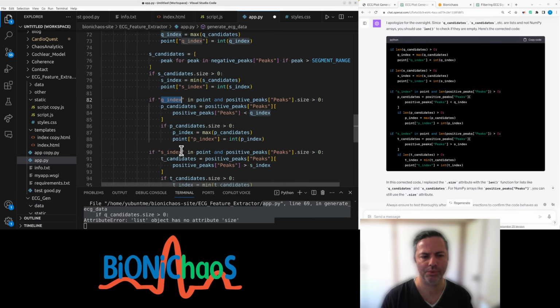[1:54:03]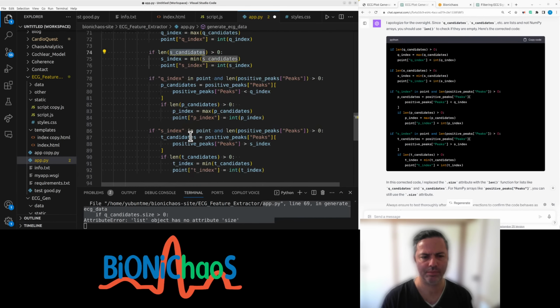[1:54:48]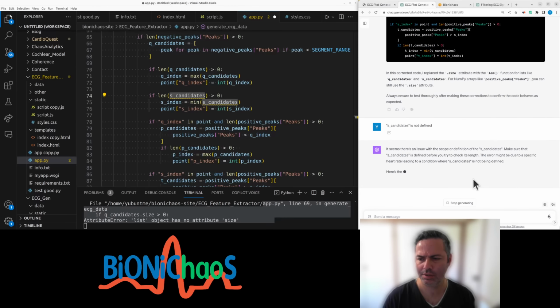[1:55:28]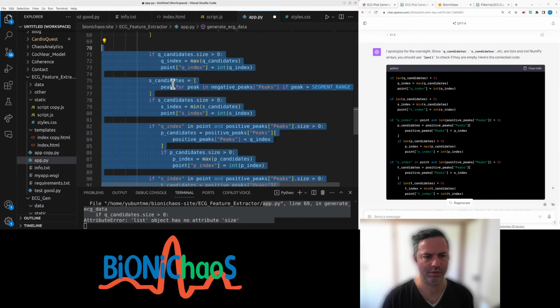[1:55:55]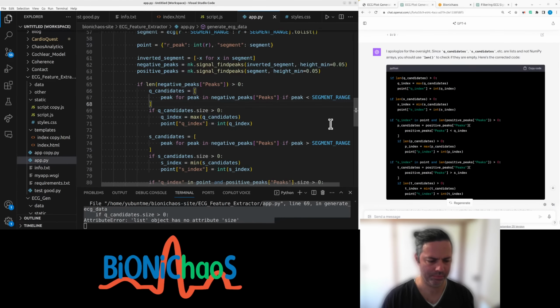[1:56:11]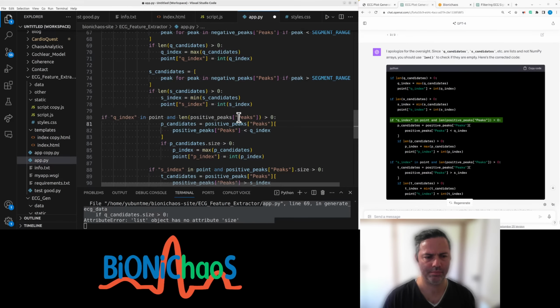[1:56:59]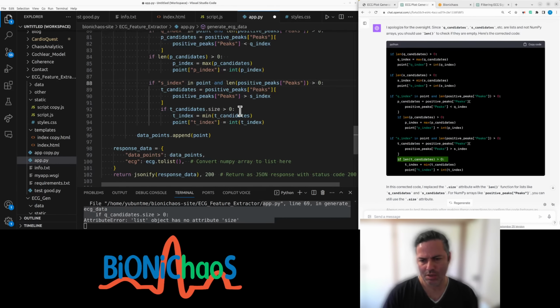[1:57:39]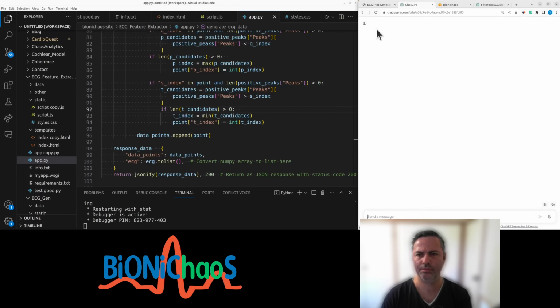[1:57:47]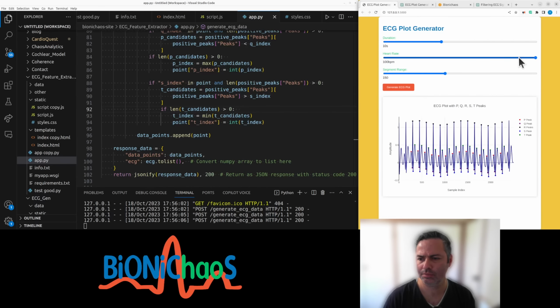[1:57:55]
If len, that's this, all the way to S, Q. Is there a mistake there? Right, because it's missing. Okay, I get it. Right, this one just stuffing up the measurement.
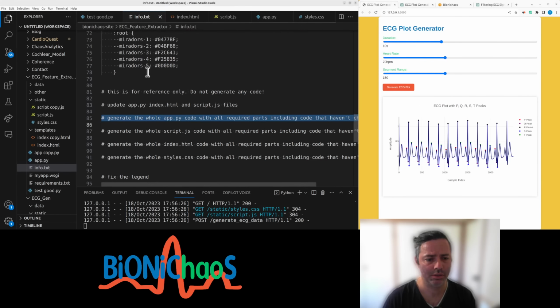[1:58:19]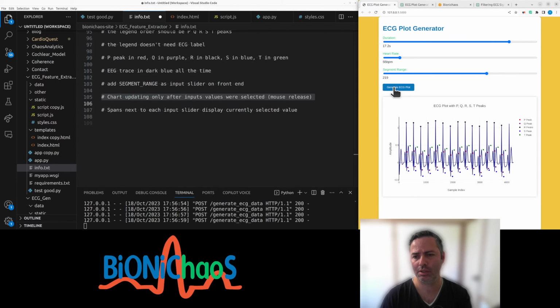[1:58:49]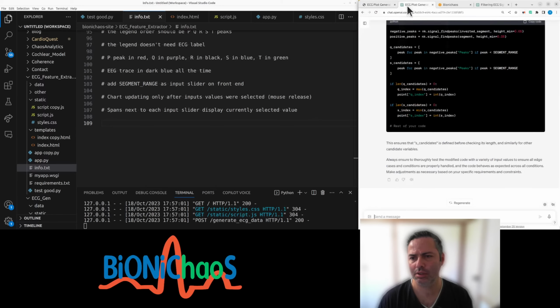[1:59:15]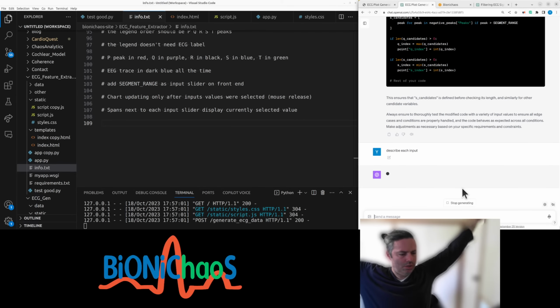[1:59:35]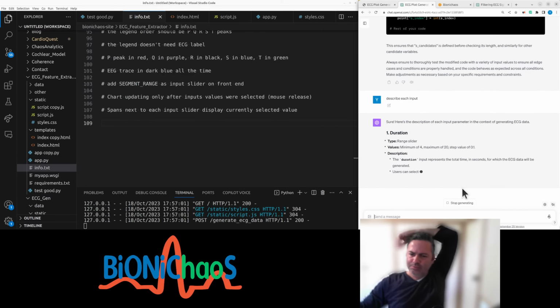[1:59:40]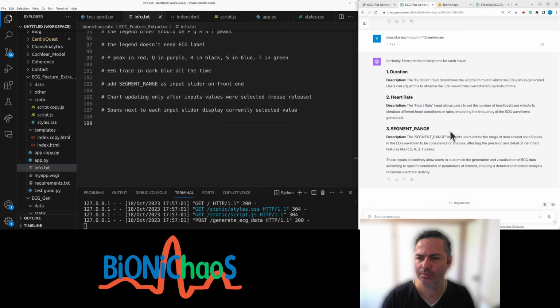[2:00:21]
So we did all that. Spans are updating fine. Chart updating only after inputs was selected, so on mouse release. That's great. Yes, that's working fine. Yeah, we need some description. Describe each input. We want 1 or 2 sentences instead of dot points. And that's pretty good.
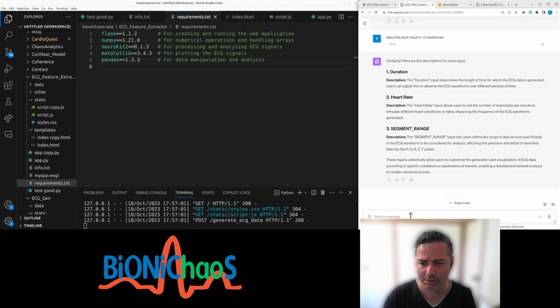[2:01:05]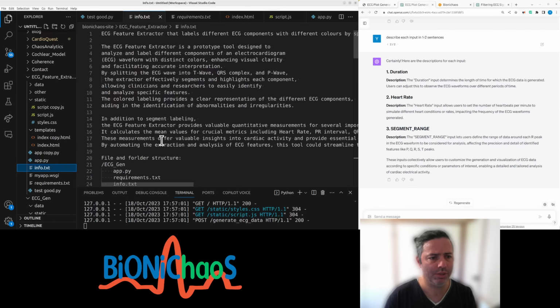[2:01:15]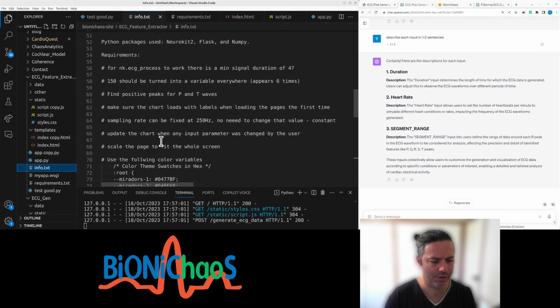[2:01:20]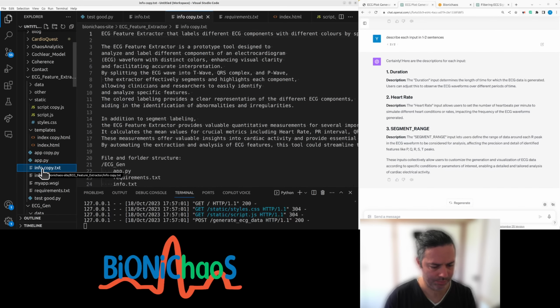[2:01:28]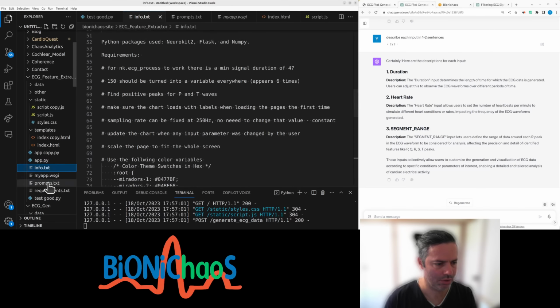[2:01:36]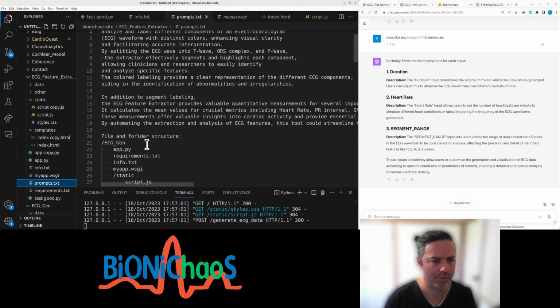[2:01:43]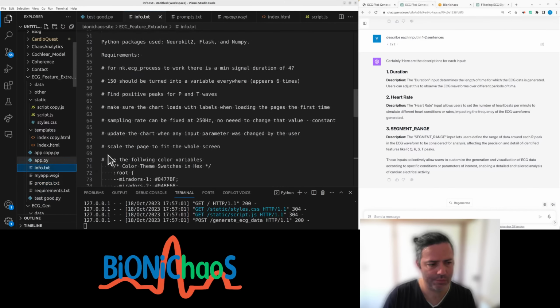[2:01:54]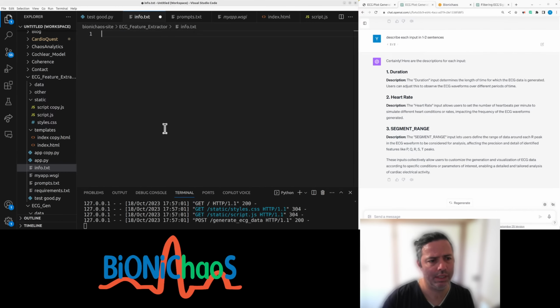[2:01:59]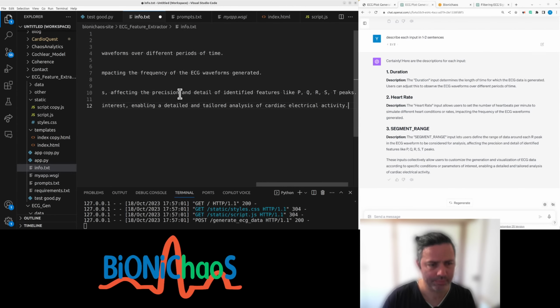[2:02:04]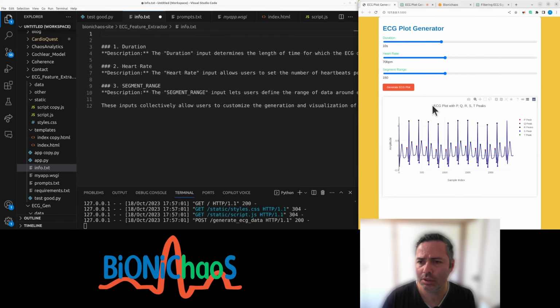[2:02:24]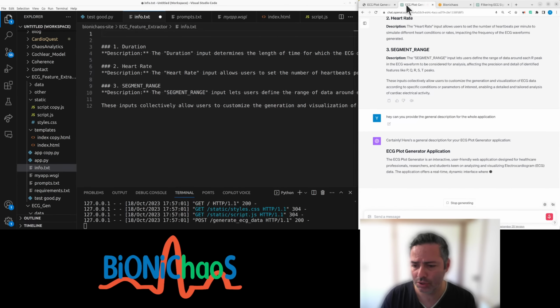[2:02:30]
Are we using pandas? I don't think we are using pandas. And this should actually be called prompts. And let's rename this into prompts info. Yeah, because that's the original description that we had. And delete that for a sec. Can you provide a general description for the whole application? So we will have it at the bottom of the page. Yeah, can we rewrite this in a less sensational language?
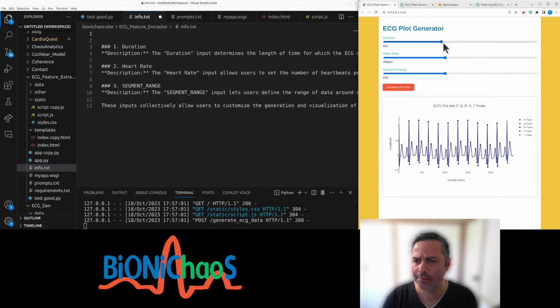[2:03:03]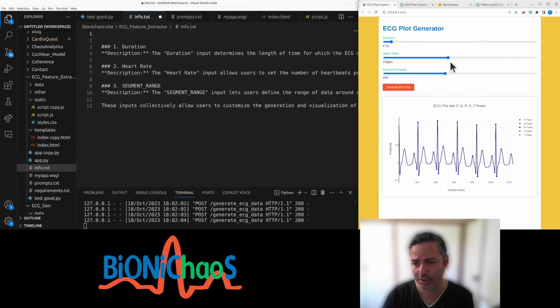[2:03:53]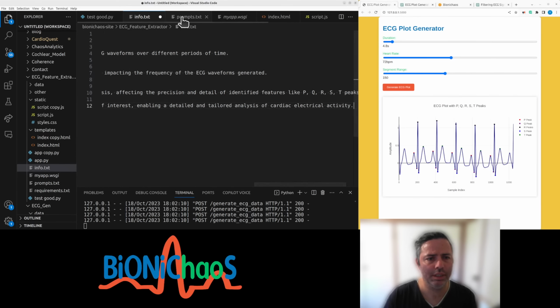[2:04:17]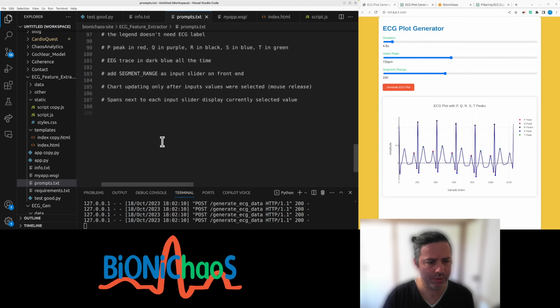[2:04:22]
Right, we need to be able to add noise to it. Or shall we just leave it in case somebody asks for it? The bit with, yeah, you can use keyboard left and right to change the parameters as well. So that's changing BPM, duration. Anyhow, yeah, it could be nice. First, probably want them larger. Where are our prompts? What are they currently?
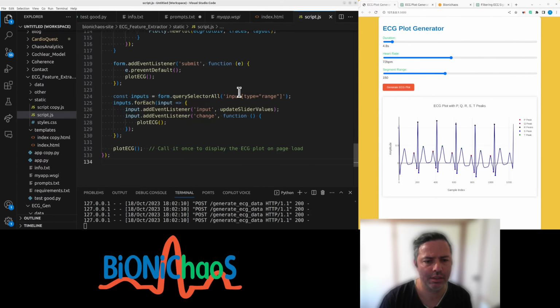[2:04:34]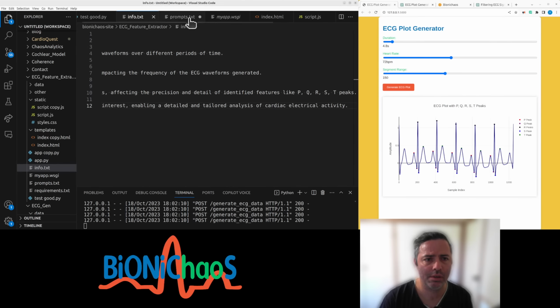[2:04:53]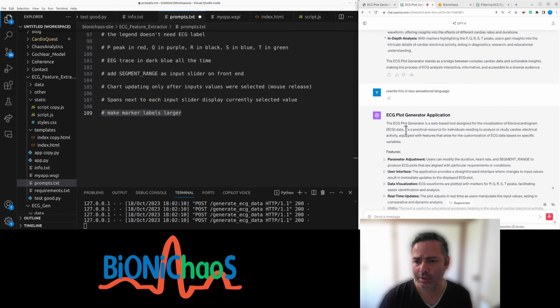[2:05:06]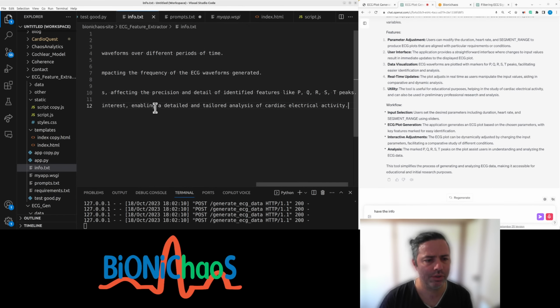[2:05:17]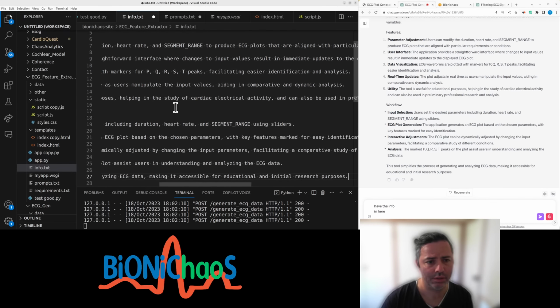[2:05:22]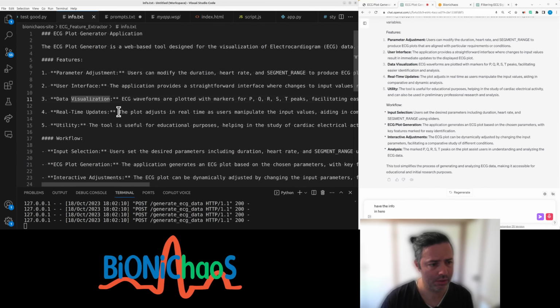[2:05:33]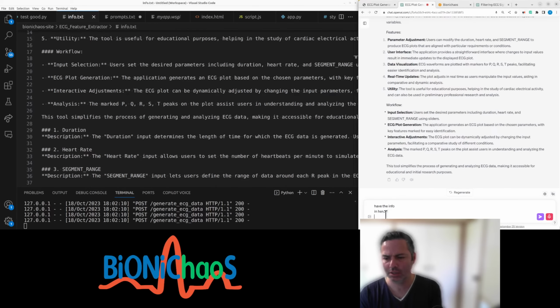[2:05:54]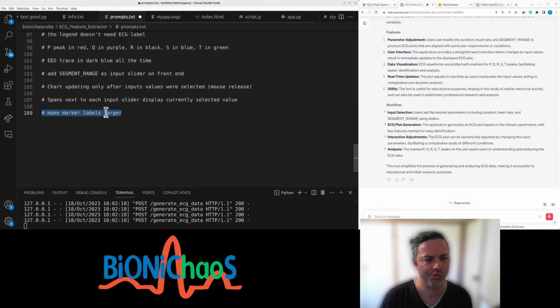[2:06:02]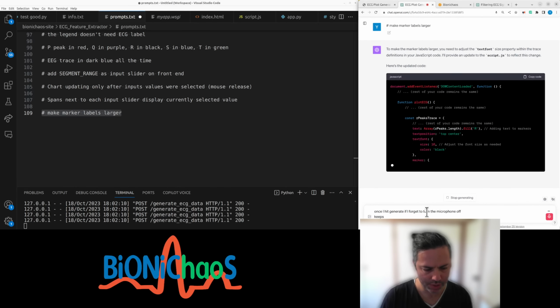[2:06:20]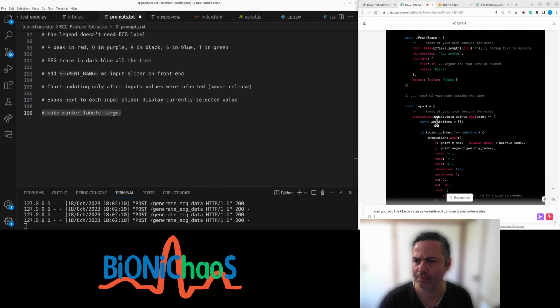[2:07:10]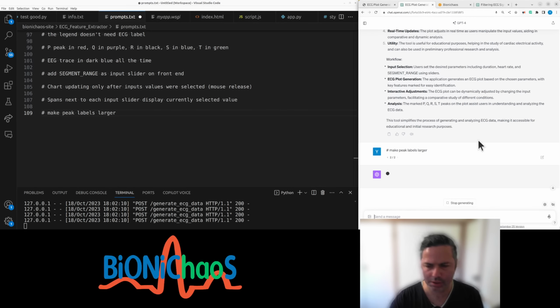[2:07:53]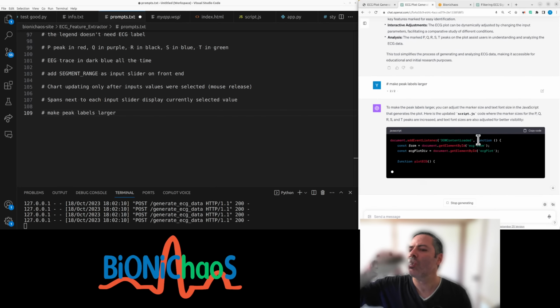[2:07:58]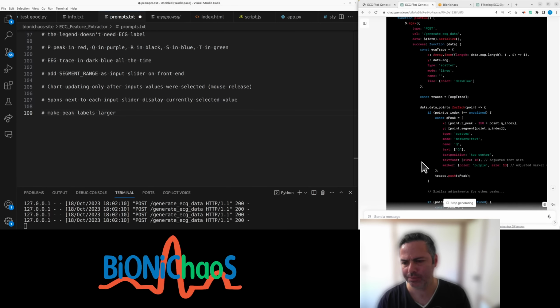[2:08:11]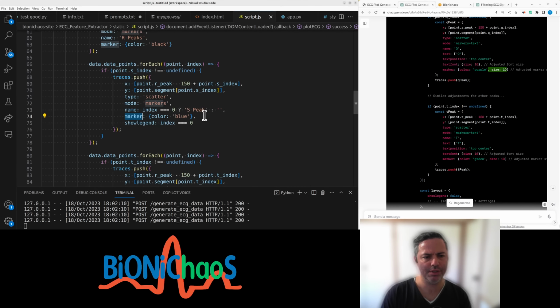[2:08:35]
Blue, show legend, marker color. We'll have the info in here. I hit generate. If I forget to turn the microphone off, it keeps transcribing everything I say. Can you add the marker size as variable so I can use it everywhere else? Has to do the labels, peak labels, larger, wasn't the text size. Just manually change that.
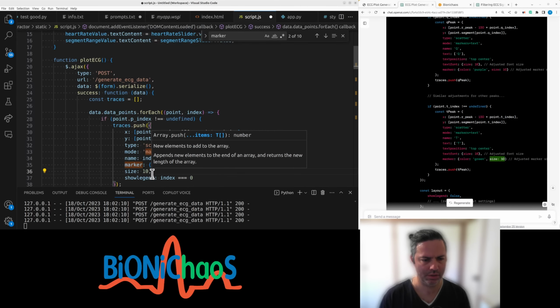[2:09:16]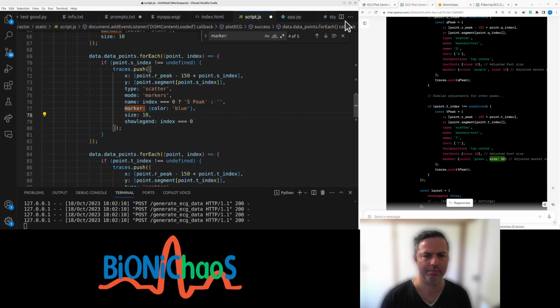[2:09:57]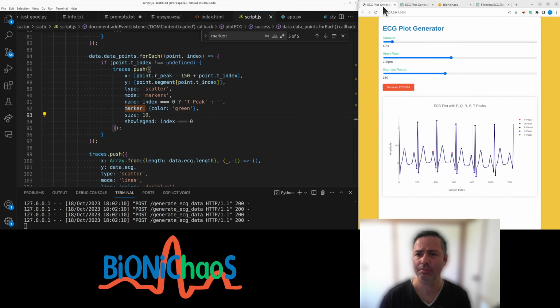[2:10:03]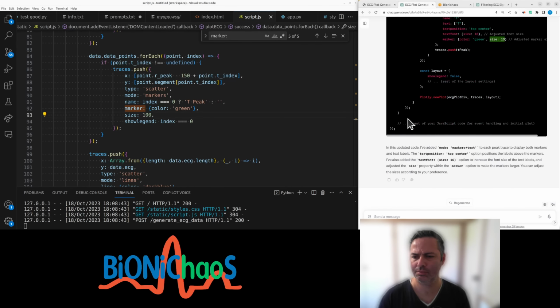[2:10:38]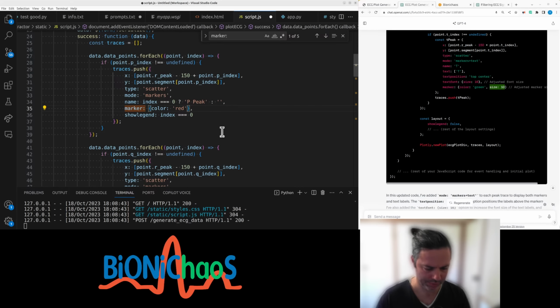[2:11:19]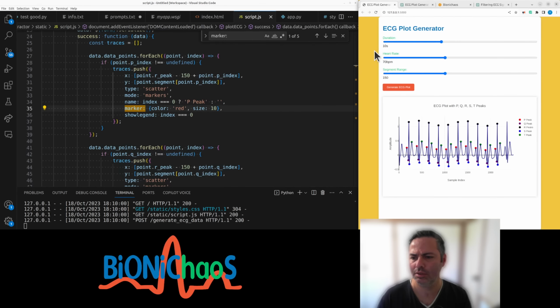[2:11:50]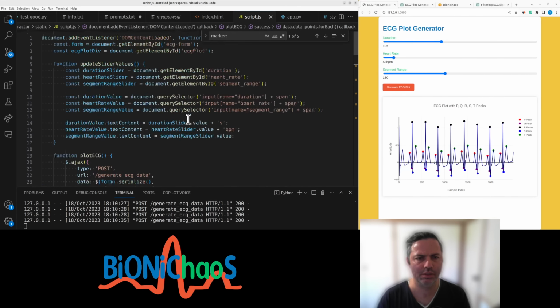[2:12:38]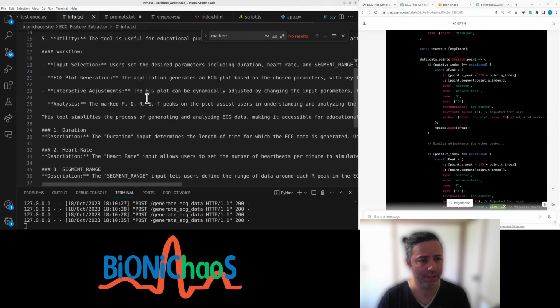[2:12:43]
Oops. Should have been inside. Why am I manually changing this instead of automating this stuff? I don't know. Right. Is this better? Yes, a bit better. It will sometimes do stuff up like that. But it's okay, it just shows how it's more realistic. We had the description.
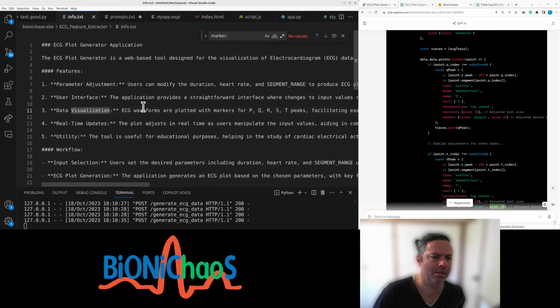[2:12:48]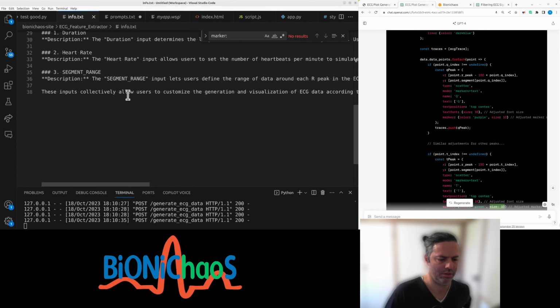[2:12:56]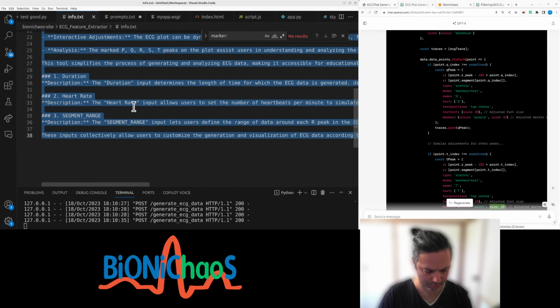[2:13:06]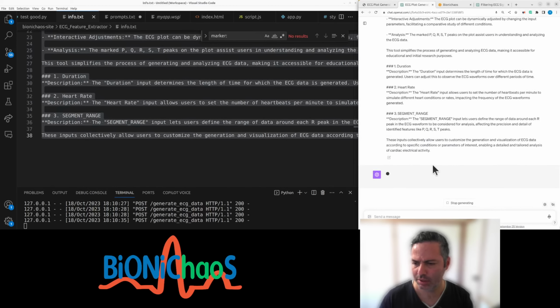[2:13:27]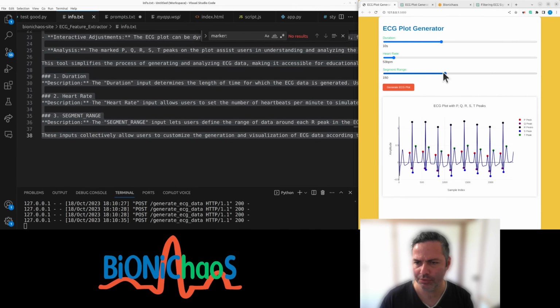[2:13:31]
Can you turn this into HTML text? I'll pop it at the bottom of the tool. I guess it's not absolutely clear that the algorithm is actually labeling the ECG, that it's not somehow labeled to begin with.
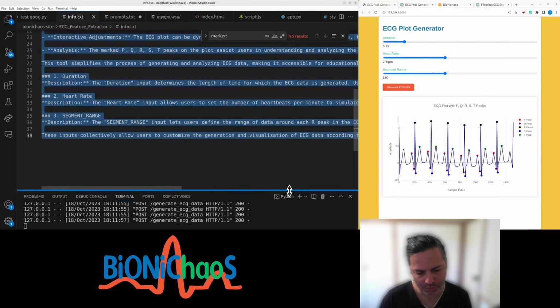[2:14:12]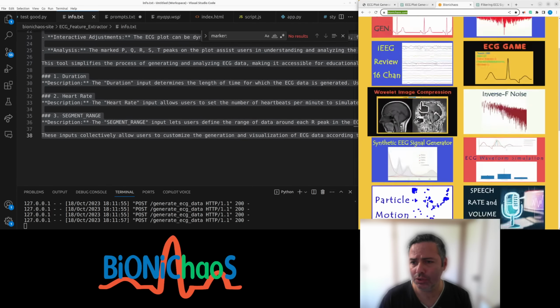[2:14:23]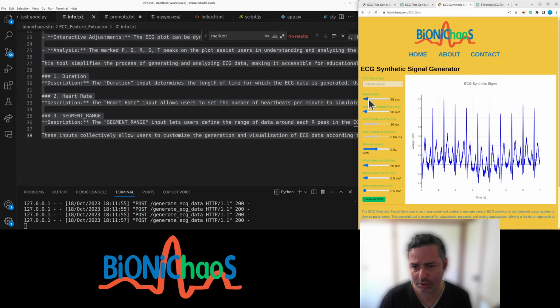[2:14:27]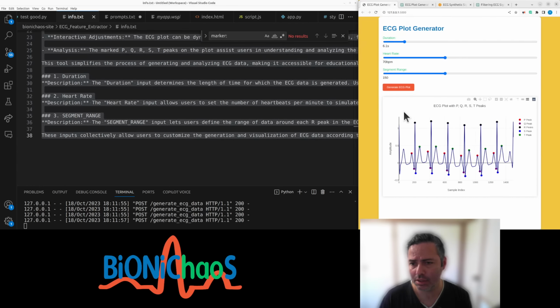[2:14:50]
I mean, the good way to show that it's actually labeling would be adding noise onto that, and then you would see that labels will get wrong all of a sudden as you increase the noise. So that would actually be a much better tool. Yeah, when we actually can change the noise level, and when you do, the labels will get all messed up, so it would not be able to label anymore once the noise is too large. So that's the general idea. Currently we don't have a noise option, but we can add it.
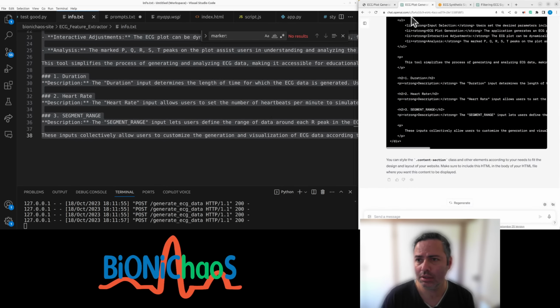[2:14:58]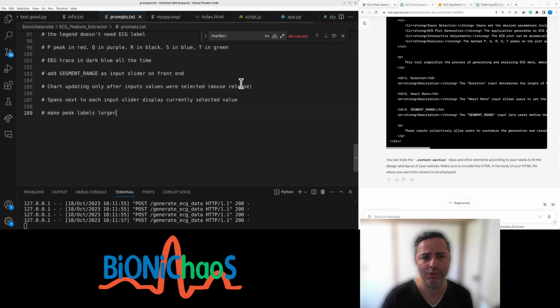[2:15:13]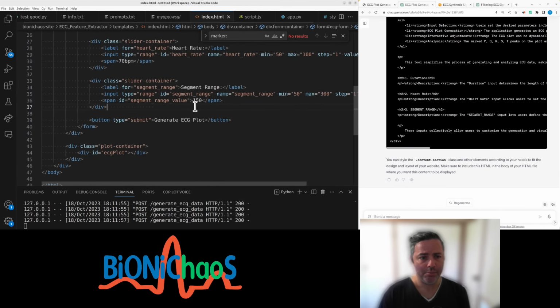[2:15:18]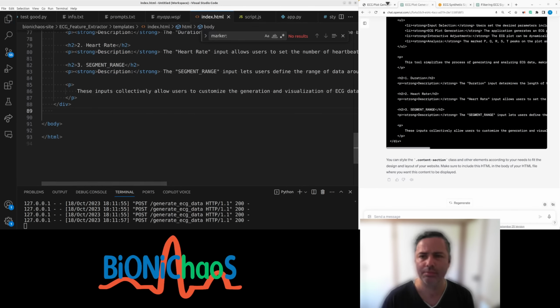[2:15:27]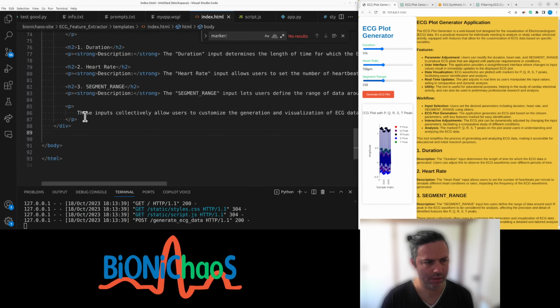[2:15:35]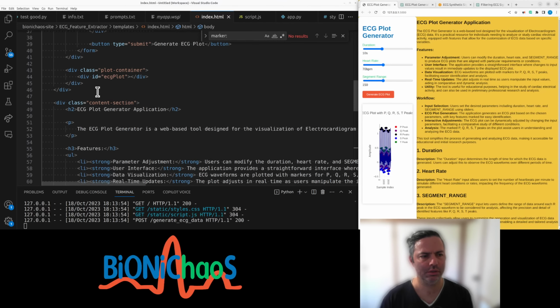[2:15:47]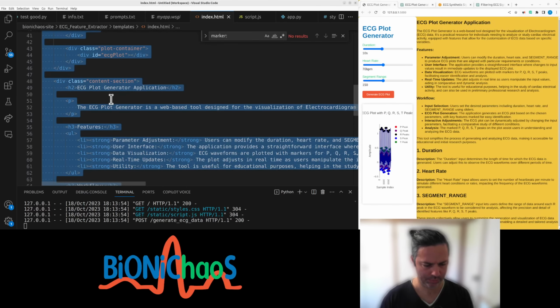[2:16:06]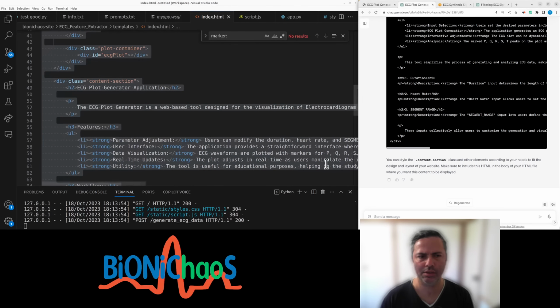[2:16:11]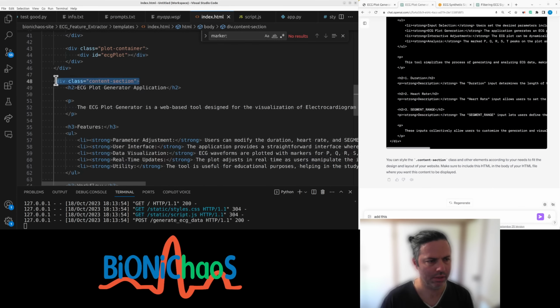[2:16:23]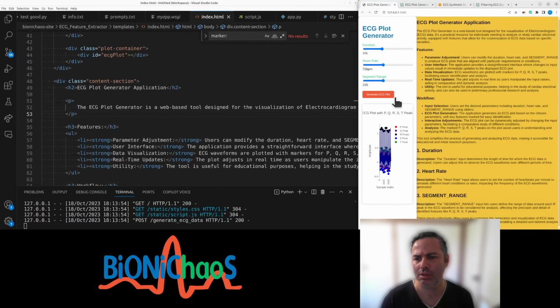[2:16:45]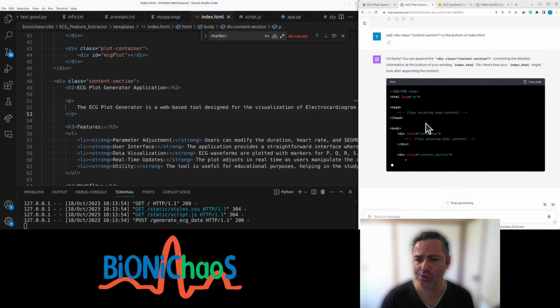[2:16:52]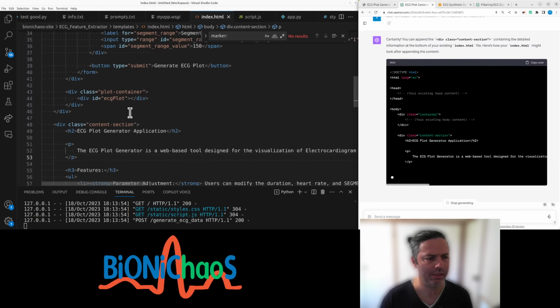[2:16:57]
This will go into our HTML. Oops, no, not like that. We want it at the bottom. Content section. Add the div class content-section to the bottom of index HTML, because we didn't do it properly. It's ended up on the right. Okay.
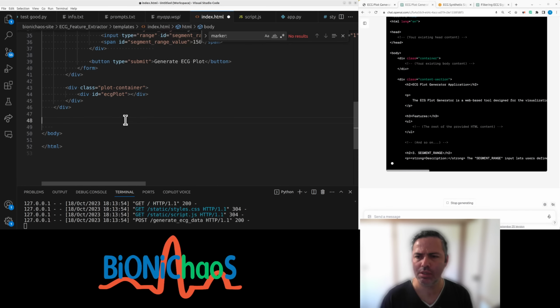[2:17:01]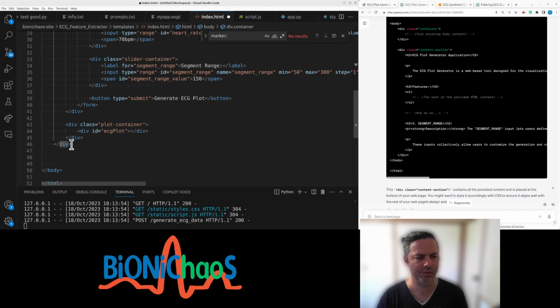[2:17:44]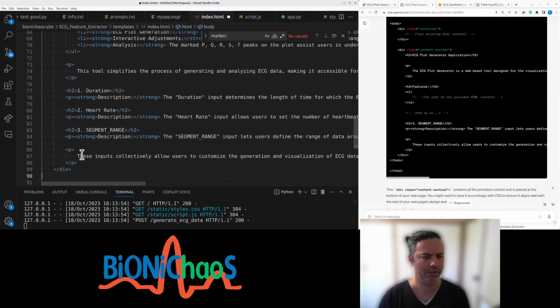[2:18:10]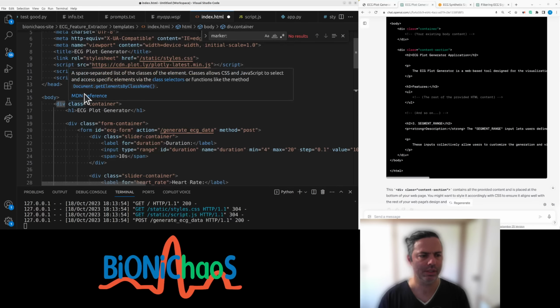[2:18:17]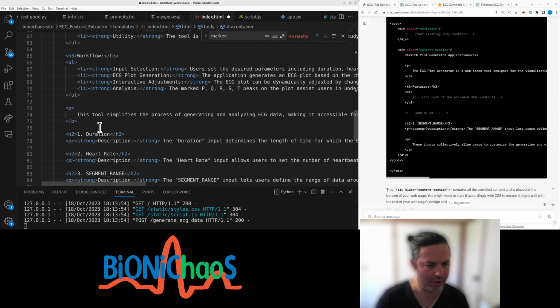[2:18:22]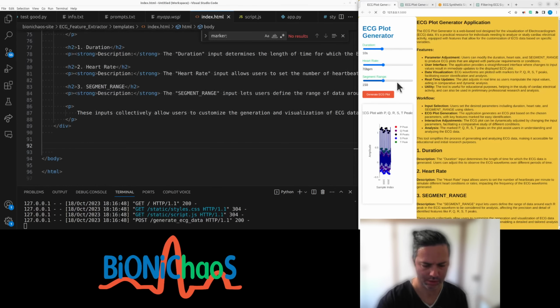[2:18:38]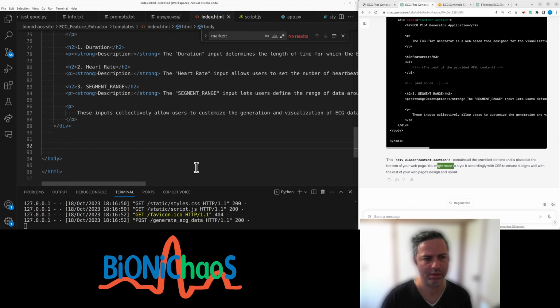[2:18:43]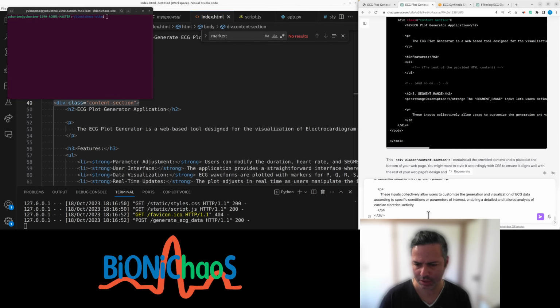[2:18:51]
So we have the header. Class container. It's the class container. This is what I did. Oops. Content section. This is the end of container, and that's the start of content section. We want to style accordingly the CSS. Oops. Oh, come on. No.
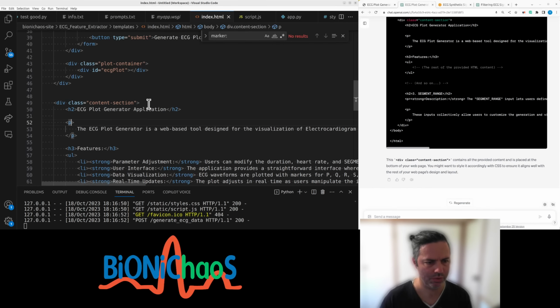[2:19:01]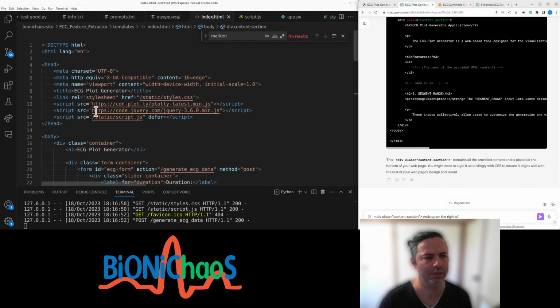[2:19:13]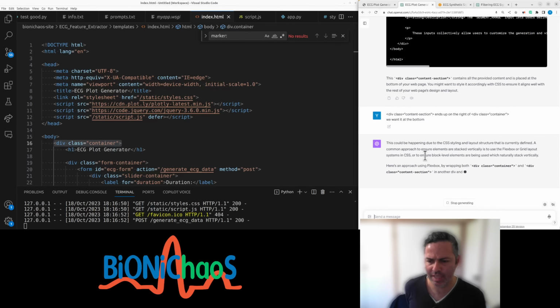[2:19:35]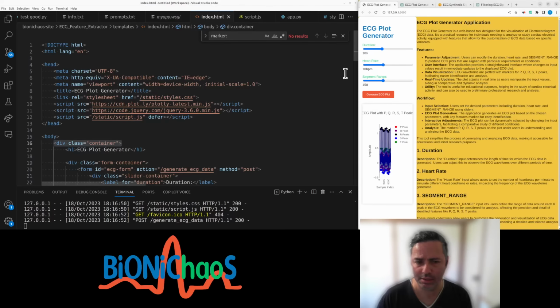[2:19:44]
Ends up on the right of, we want it at the bottom. Do I need to change the CSS? No. A flex box, yeah, of course. Okay, we'll style it later and release it hopefully sometime this week. I'll see you later.
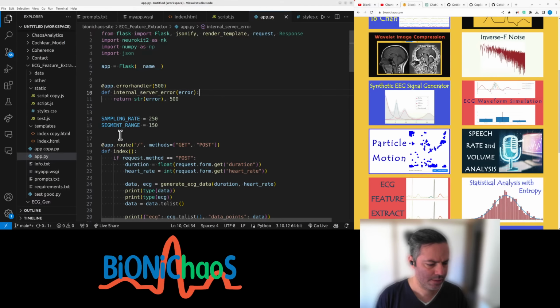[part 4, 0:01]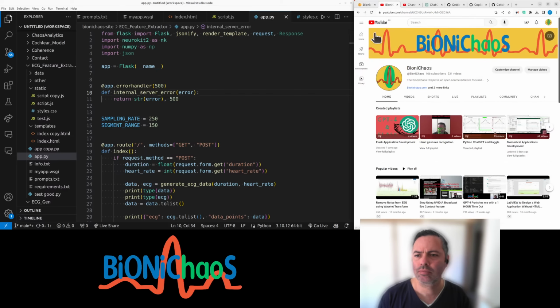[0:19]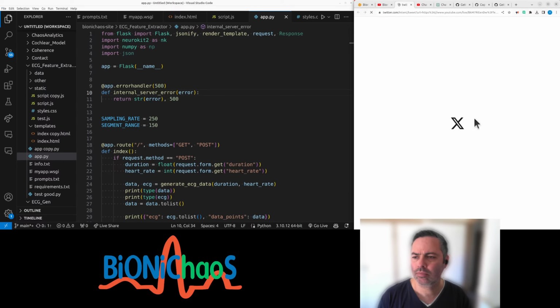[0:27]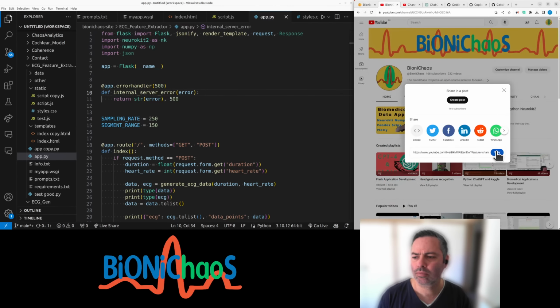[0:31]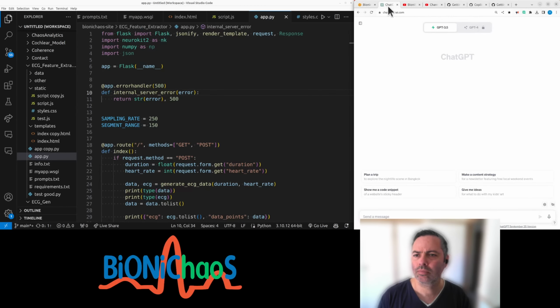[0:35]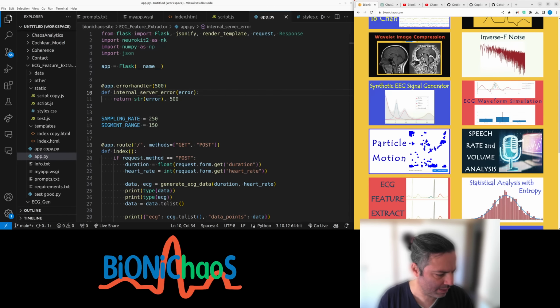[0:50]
Okay, I'll start in a second. I want to check my sound.
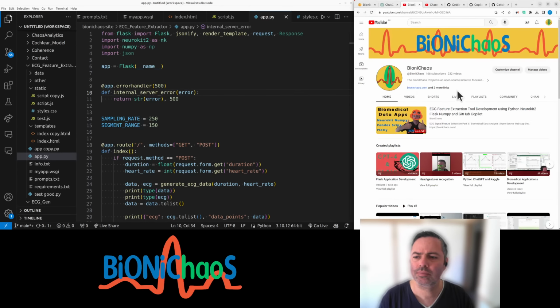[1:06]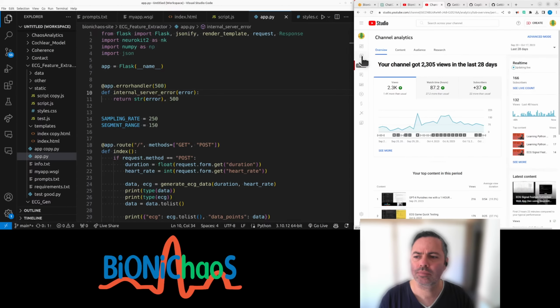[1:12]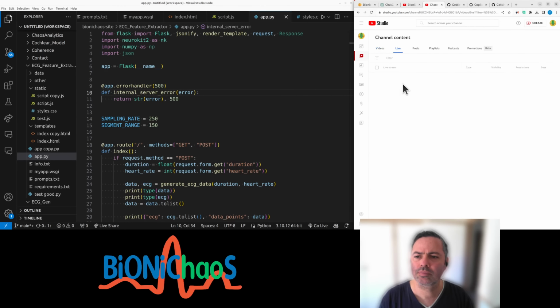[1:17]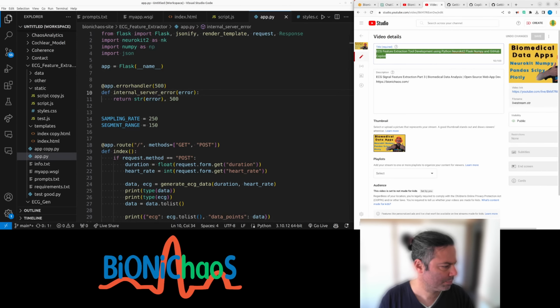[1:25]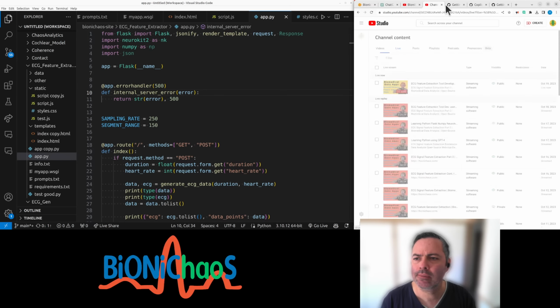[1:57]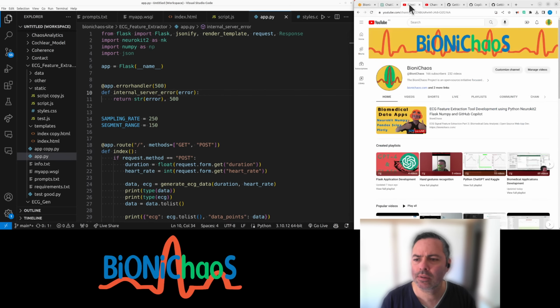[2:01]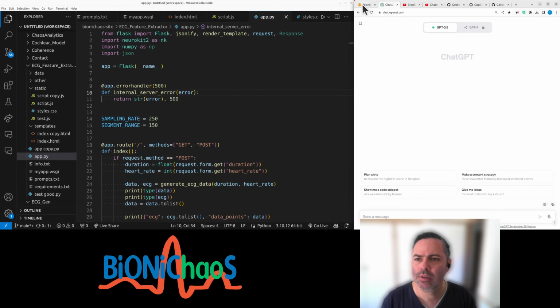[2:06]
Let's close any social media, it's super distracting. So we don't have GPT-4 anymore. We'll be using 3.5. I do now have GitHub Copilot, so we'll be using that instead.
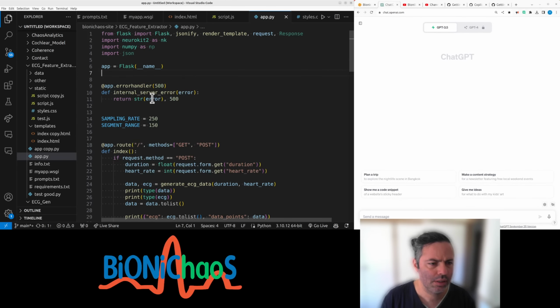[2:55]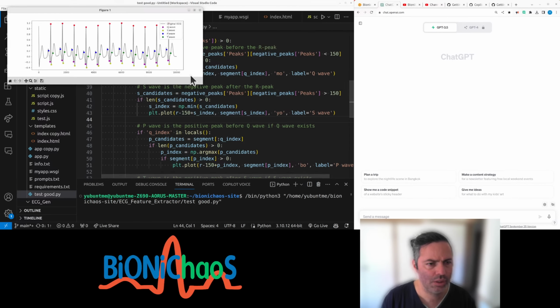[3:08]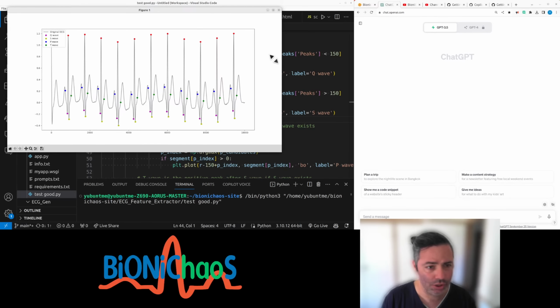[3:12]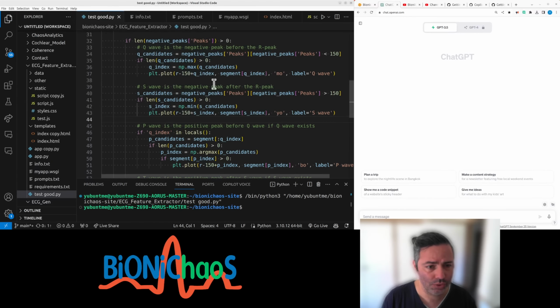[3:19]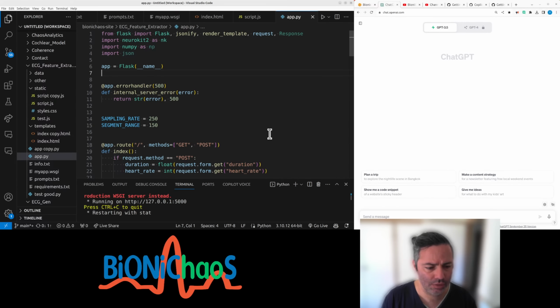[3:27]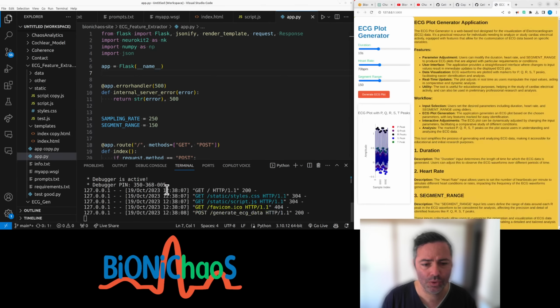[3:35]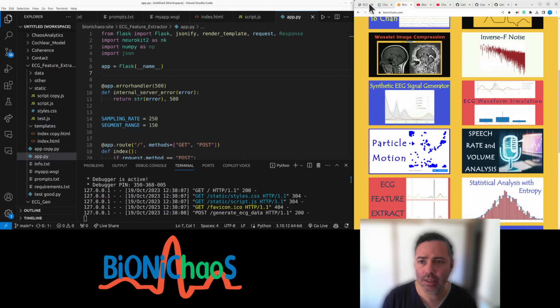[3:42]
So let's see, we had this application. Originally it was meant to be doing this labeling of ECG waveform. This one's doing okay. I think we actually improved on it and turned it into a Flask application. So we can run it from here locally at the moment. I'll make it available for you as well in a bit, just fixing a few minor things.
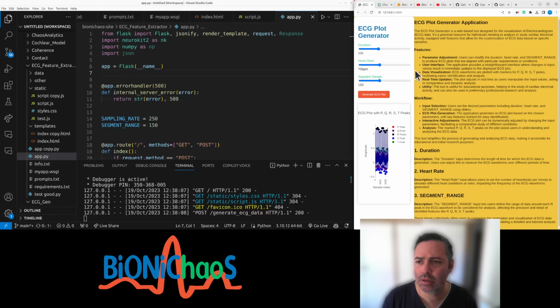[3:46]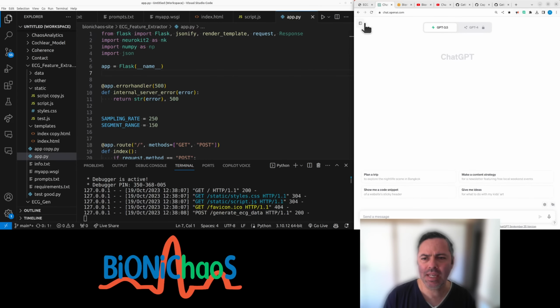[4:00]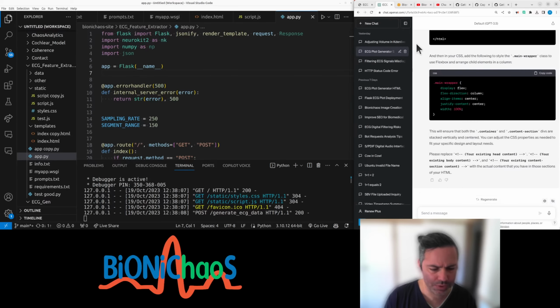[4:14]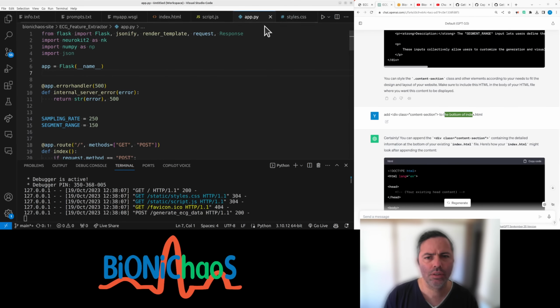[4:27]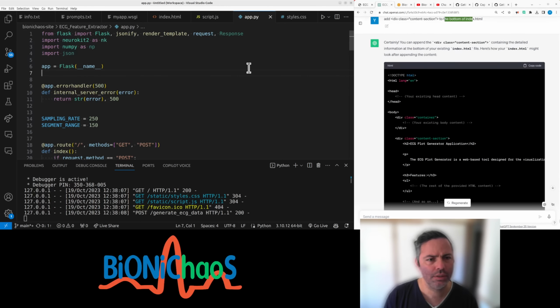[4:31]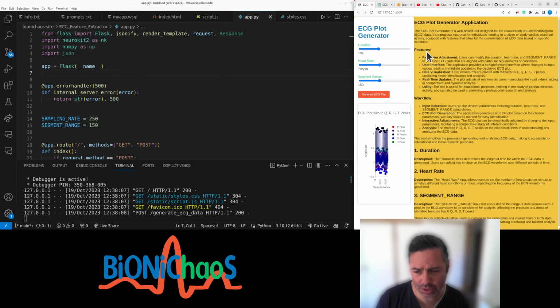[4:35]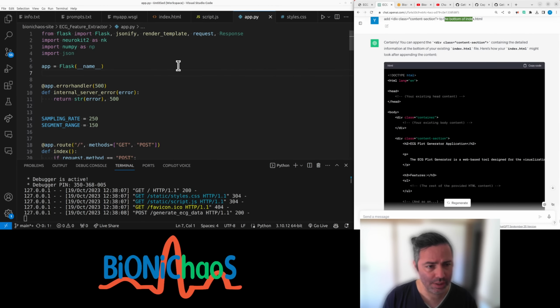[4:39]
Currently, what happens to previous chats? ECG plot generation. I think it was this one. Yes. I wanted to change the HTML, so that all the description is at the bottom, not on the side. I don't know why it is on the side.
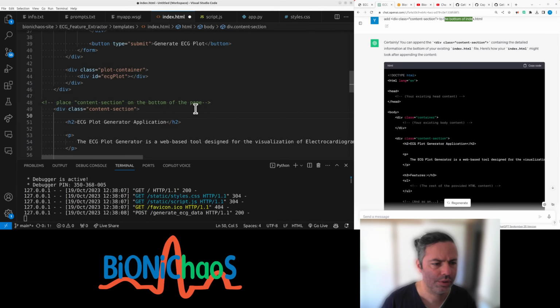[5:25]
So we want to place a content section on the bottom of the page. Does it work for HTML at all? It should be active. App description, bottom of the page. It's not actually doing anything. I don't know why. Maybe it doesn't work for HTML.
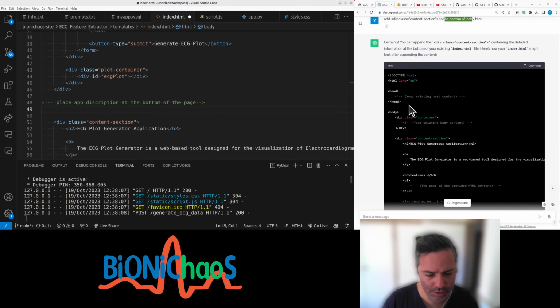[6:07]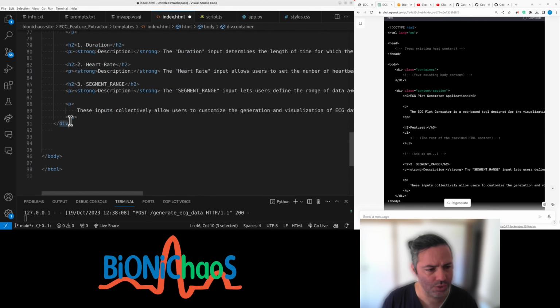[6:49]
I haven't actually used Copilot. Oh no, I did use Copilot before, but only briefly. Containing the detailed information on the bottom of the existing index HTML. Here's how it might look after appending the content. Right, so we have a header. In the body we have a class container which ends over here. Okay, that is how it looks, so that should be fine.
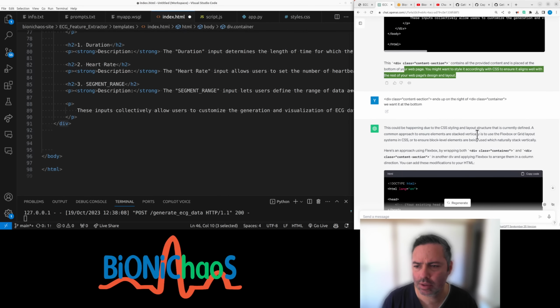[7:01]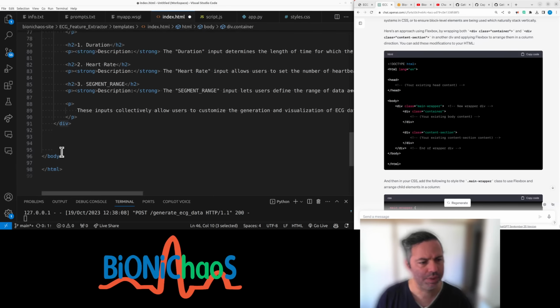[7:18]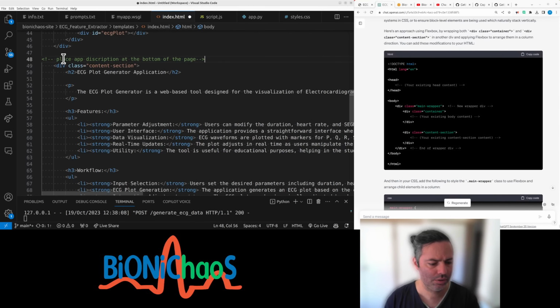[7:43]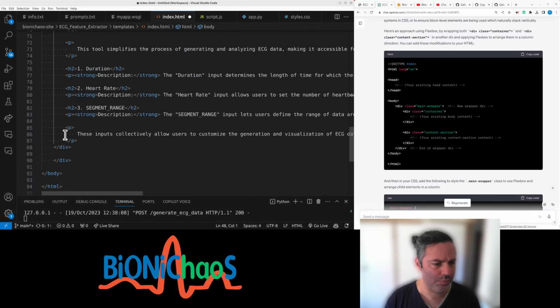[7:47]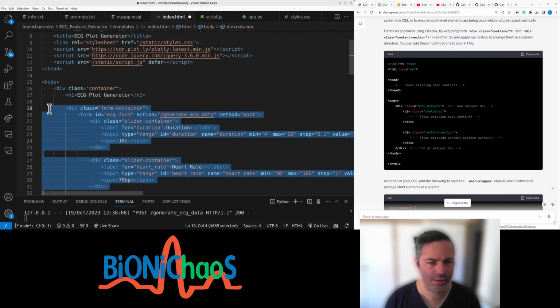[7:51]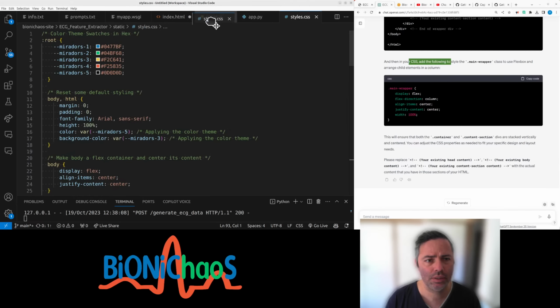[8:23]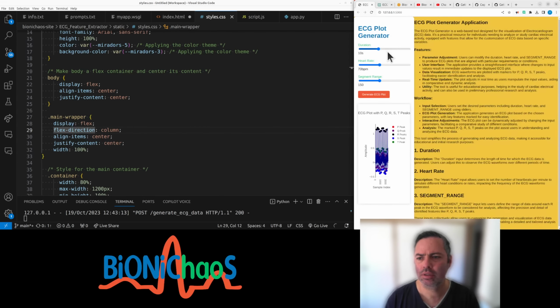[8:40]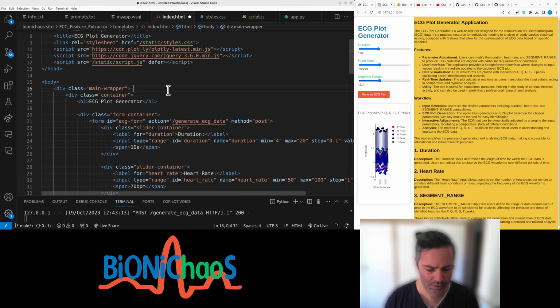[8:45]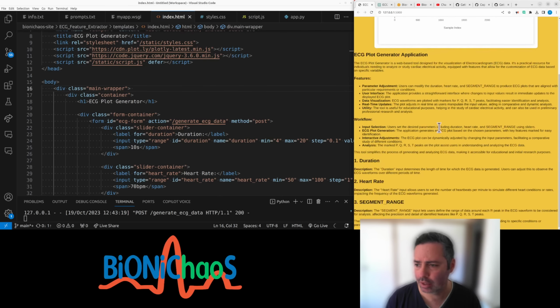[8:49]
This within the body main wrapper. We need a main wrapper. Assume we'll have another one of those. All this will move, be appended. And here we'll have a new wrapper. Don't need that comment. And the CSS will have a main wrapper. Let's move the CSS over here. Container. Let's move it in here. Save that. Right, now it's working okay.
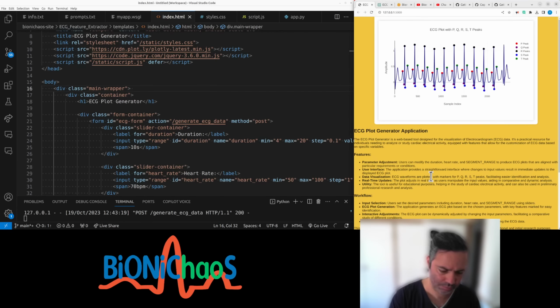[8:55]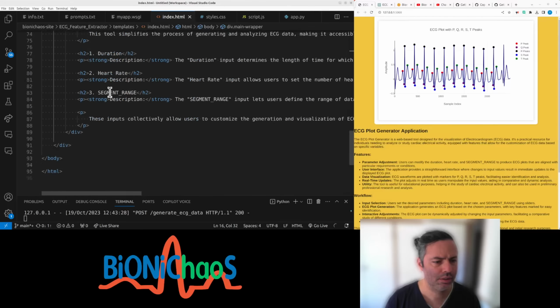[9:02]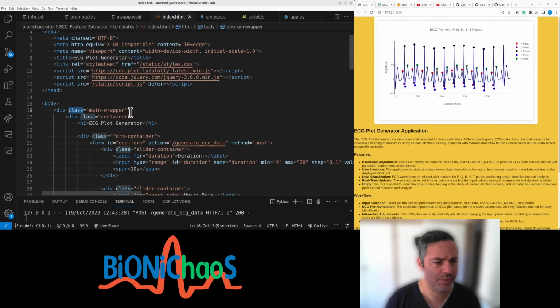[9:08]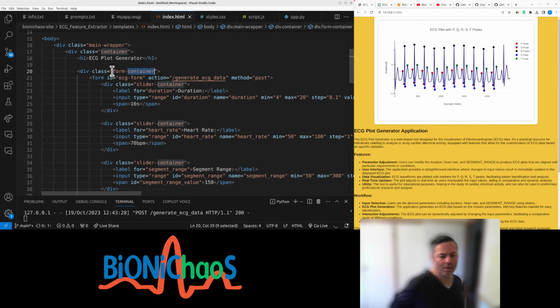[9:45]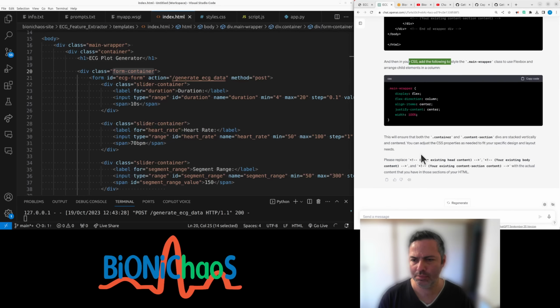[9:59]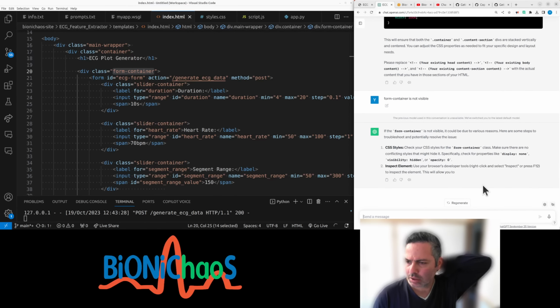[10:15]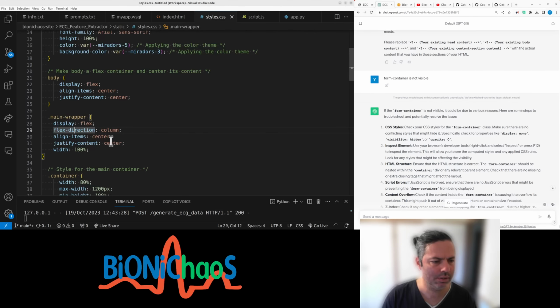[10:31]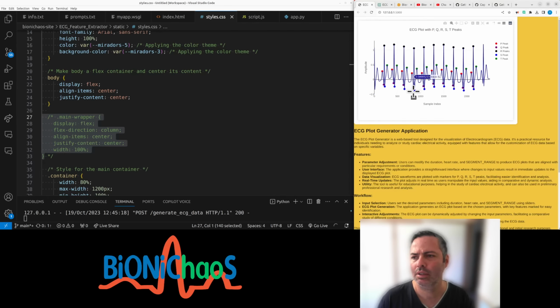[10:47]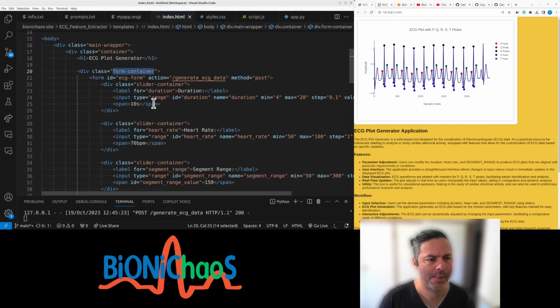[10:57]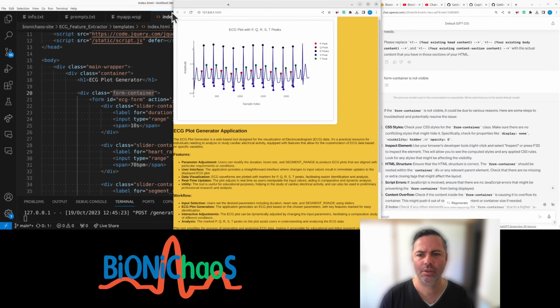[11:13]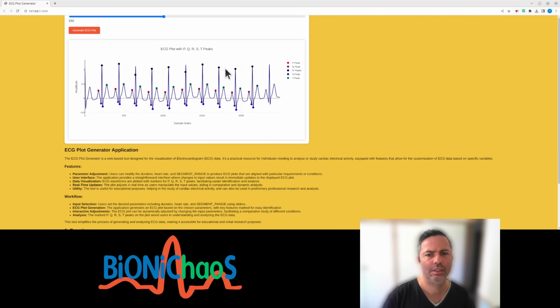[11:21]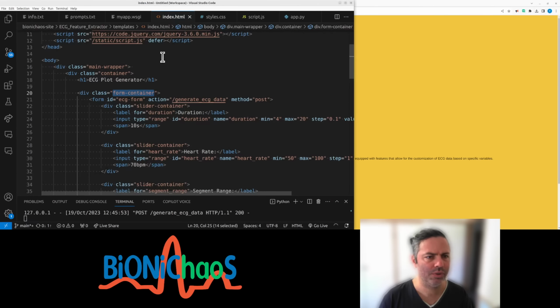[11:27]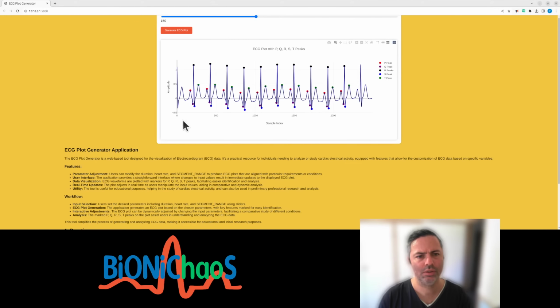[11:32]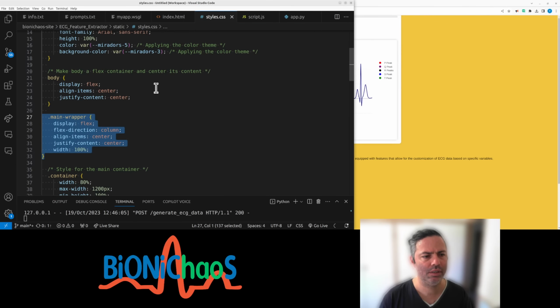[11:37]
Is this the body main wrapper container? Did the input variables just disappear on me? HTML. A form container is not visible. Styles center. So if I comment this out... Where is the form? Right, the form is there. It's outside the screen. What? The form is outside the screen.
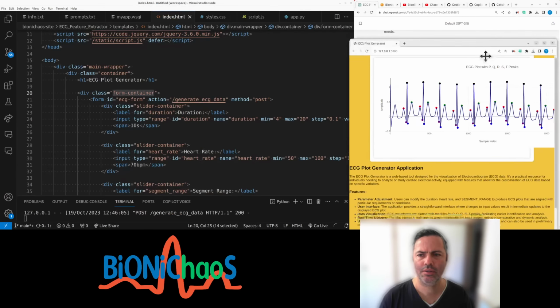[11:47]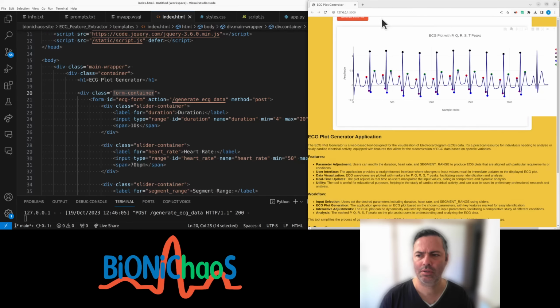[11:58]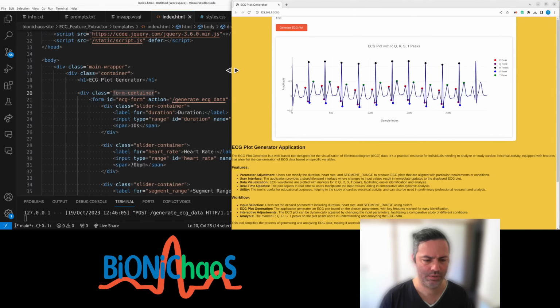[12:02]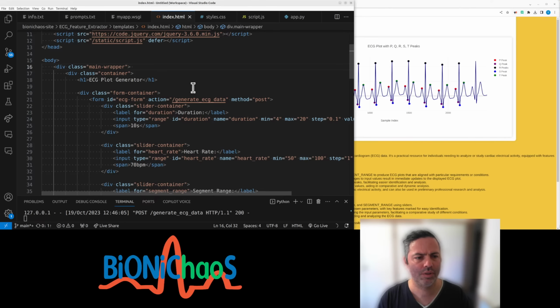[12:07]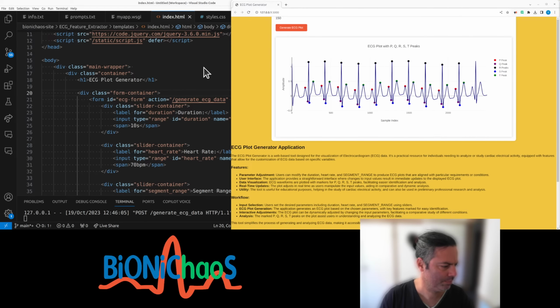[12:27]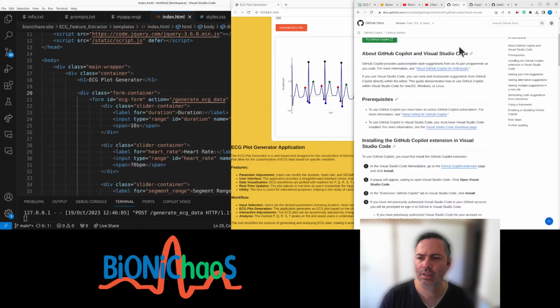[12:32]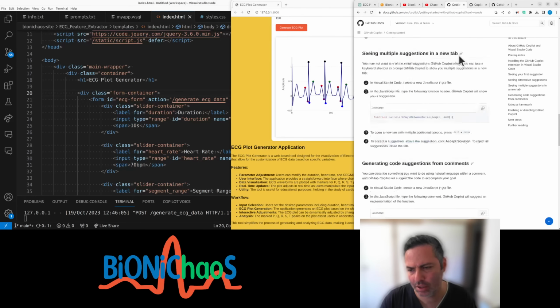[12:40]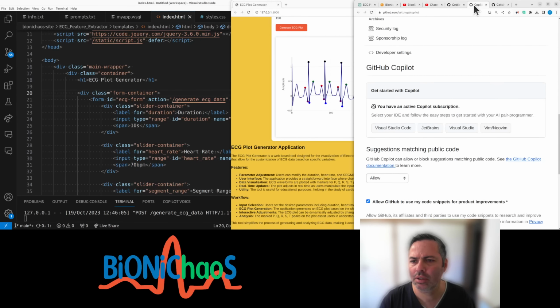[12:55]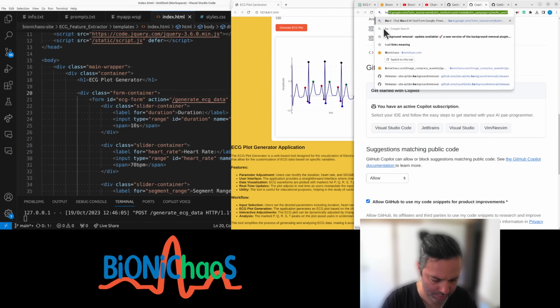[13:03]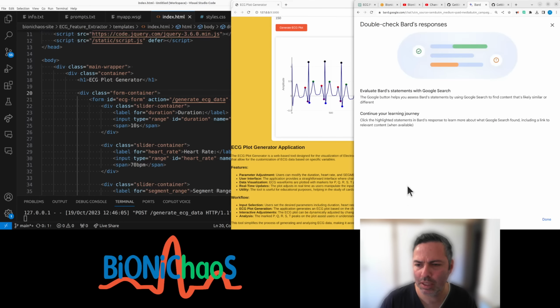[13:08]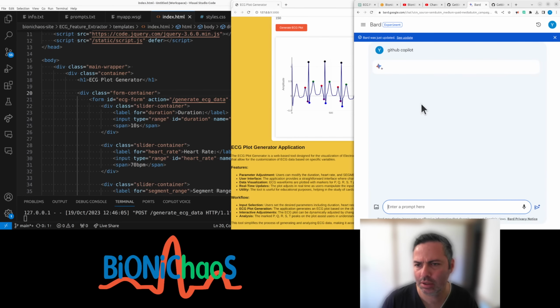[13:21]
So can I use Copilot to troubleshoot stuff? And no spacing for suggestion. Yeah, we tried that. That works okay. Generate code from comments. JavaScript doesn't work in HTML. Let's use the chat. And GitHub Copilot. No, just trying to see if the bot is working at all. It's thinking forever.
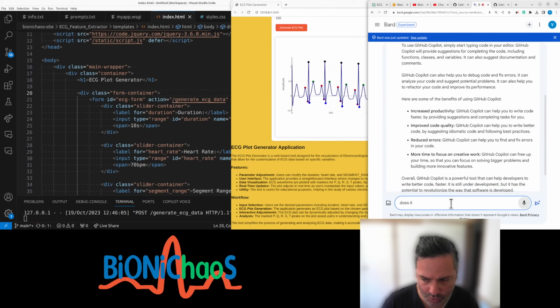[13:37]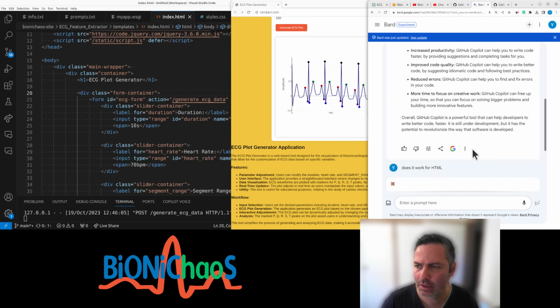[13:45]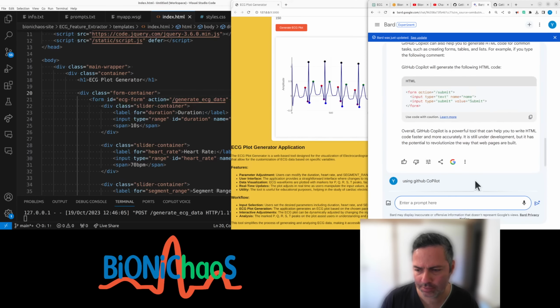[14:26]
Does it work for HTML? Yes. Generate. Suggest the following completion, for example, to start typing the following HTML code. Generate the following, overall GitHub, blah blah blah. Yeah, powerful tool. That's okay. How to troubleshoot a layout of an HTML page using GitHub Copilot. The voice to text is not great.
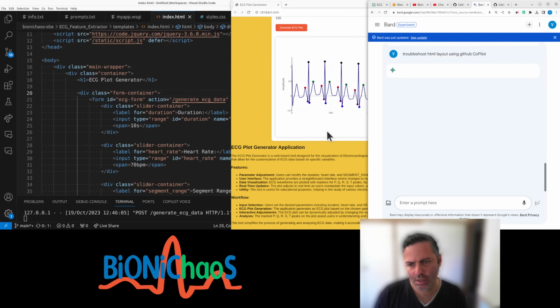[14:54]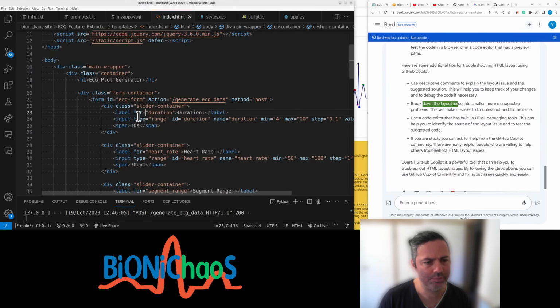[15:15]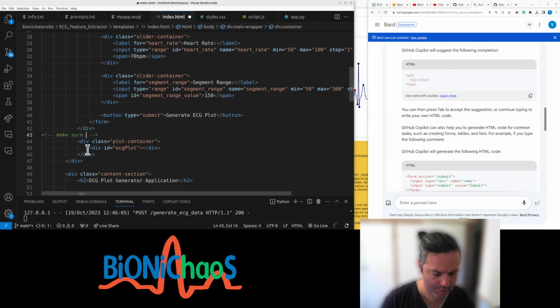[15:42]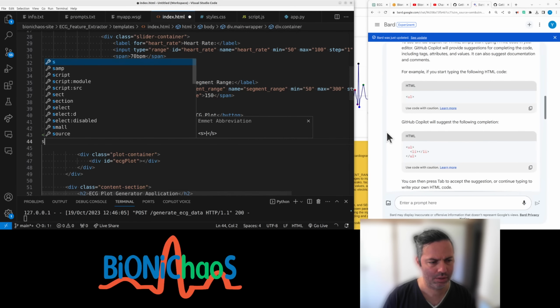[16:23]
Is there a way to troubleshoot HTML layout? Can't spell. Update this. And make sure how to. Visible page. So how is GitHub meant to work? It's working. It's trying to do something.
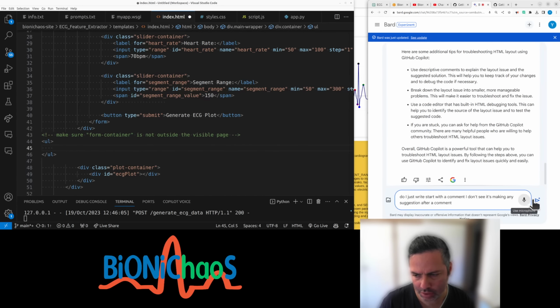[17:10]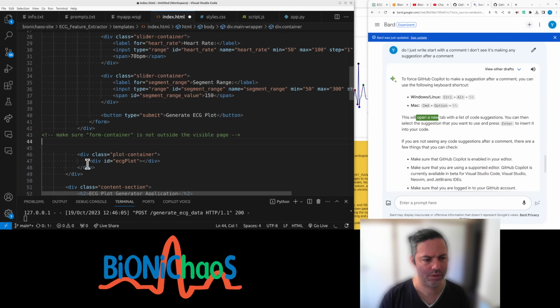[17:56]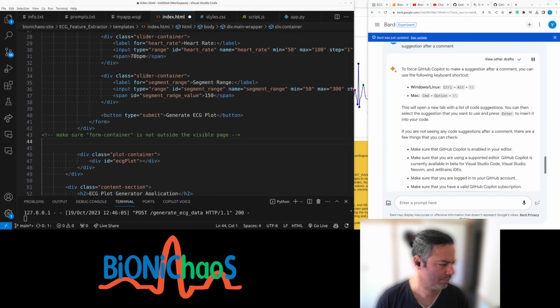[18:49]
HTML code. Generate the following code. Do I just start with a comment? I don't see it making any suggestion after a comment. Duration span, that's not relevant, is it? GitHub Copilot suggests code after a comment; you can use the keyboard shortcut Control Alt to open a new tab with a list of code suggestions. It's only in beta, is it still in beta?
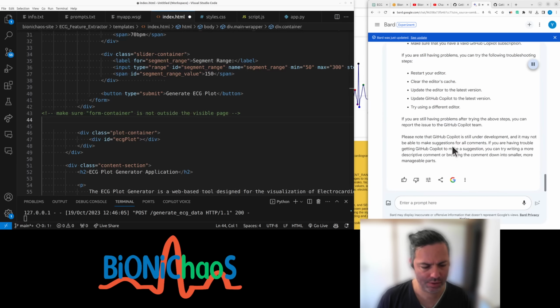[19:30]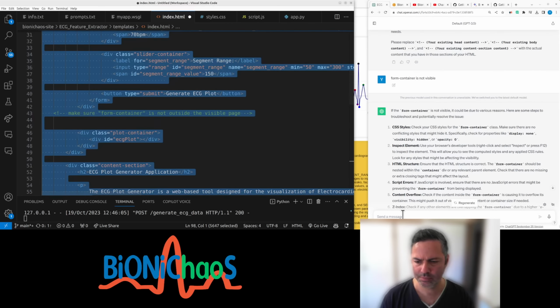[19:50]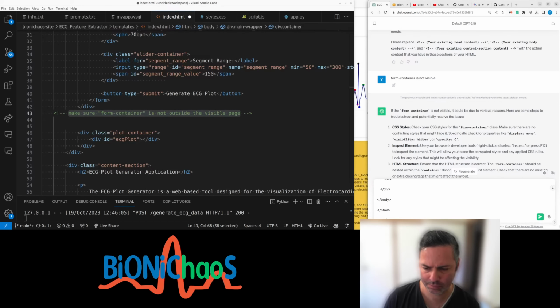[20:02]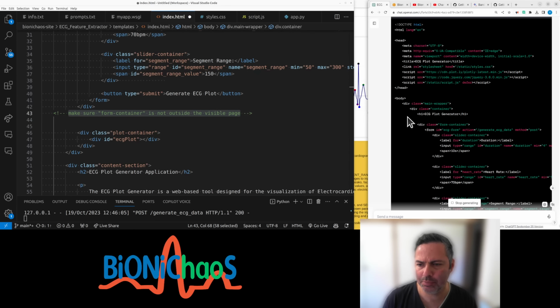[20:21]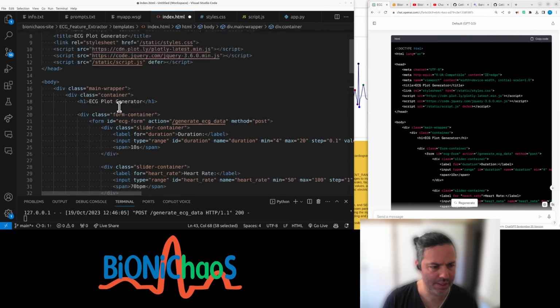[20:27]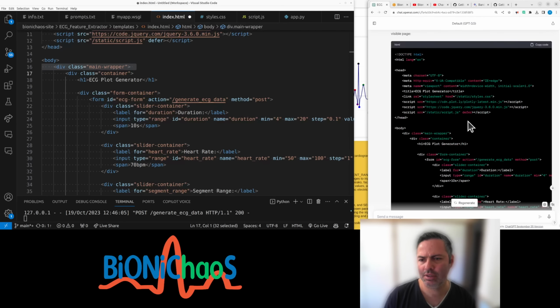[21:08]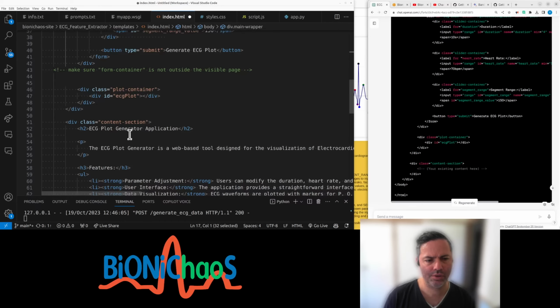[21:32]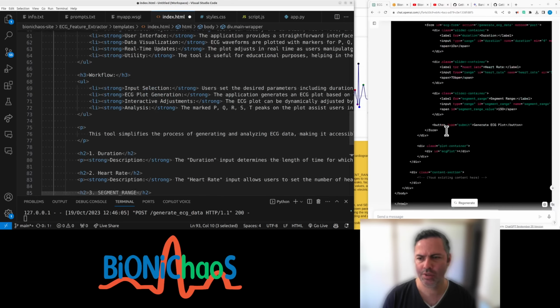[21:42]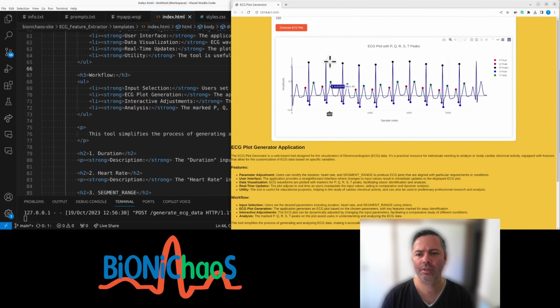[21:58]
Form container is in the visible page, and on the side you can adjust the HTML structure. Here's an updated version of your HTML. It places the form container within the visible page. So we have our main wrapper. We have a container. I'm pretty sure it's the same. What's the difference? It should be within the main wrapper. Can we do this as well? Still outside the page. Why?
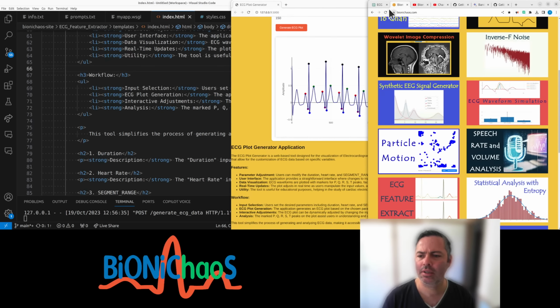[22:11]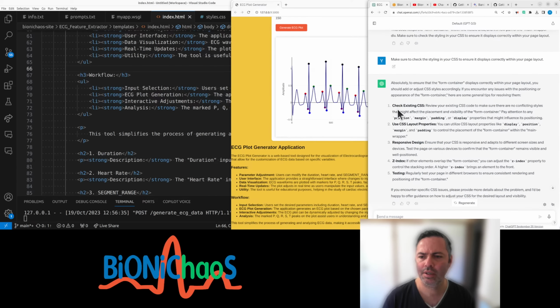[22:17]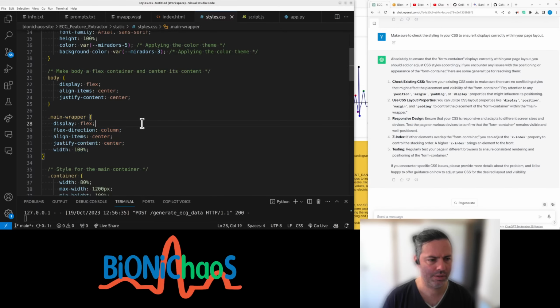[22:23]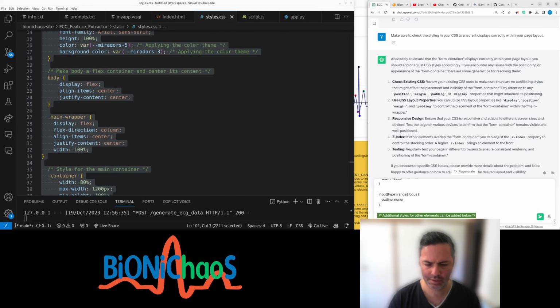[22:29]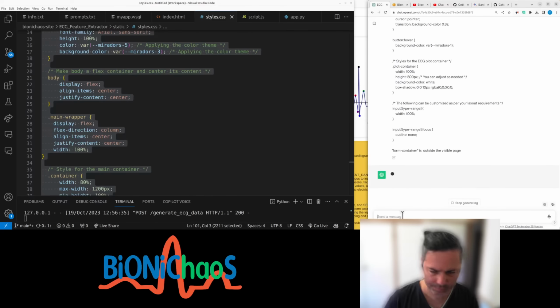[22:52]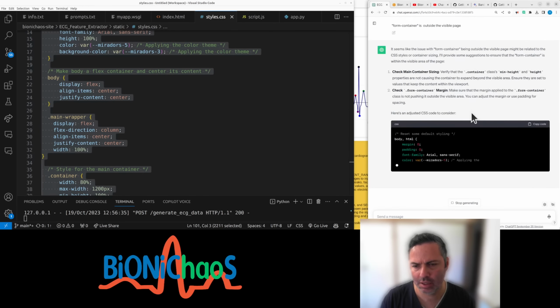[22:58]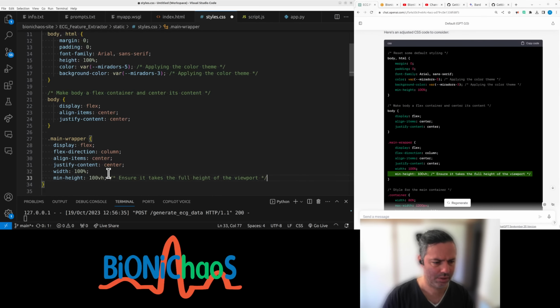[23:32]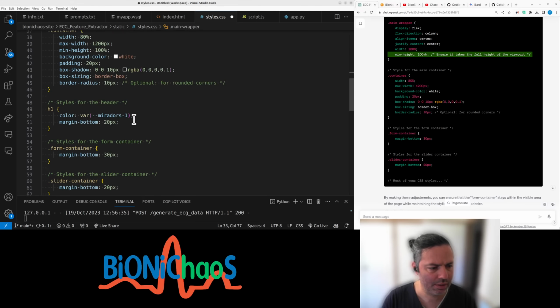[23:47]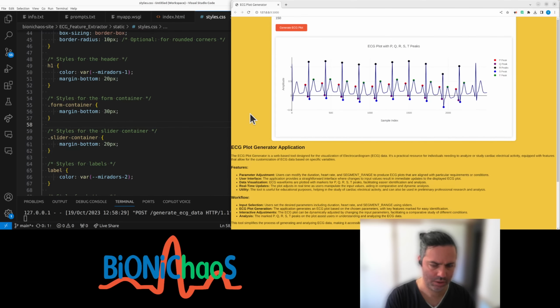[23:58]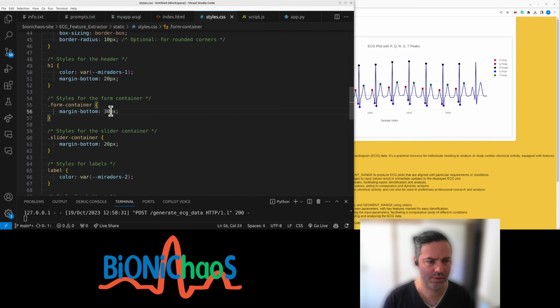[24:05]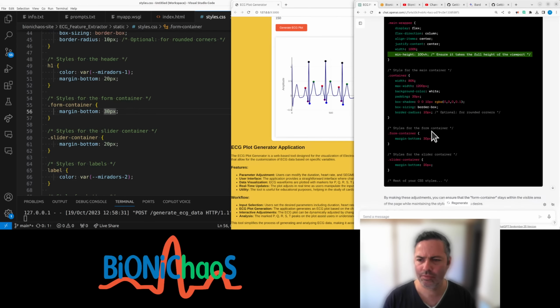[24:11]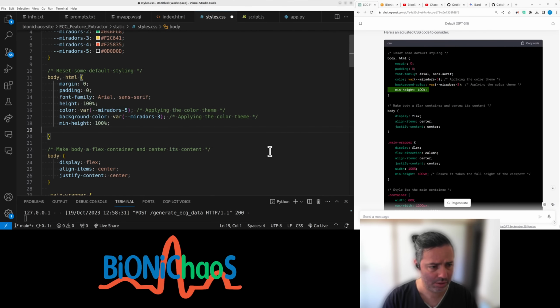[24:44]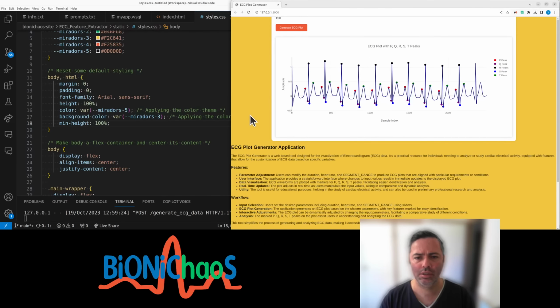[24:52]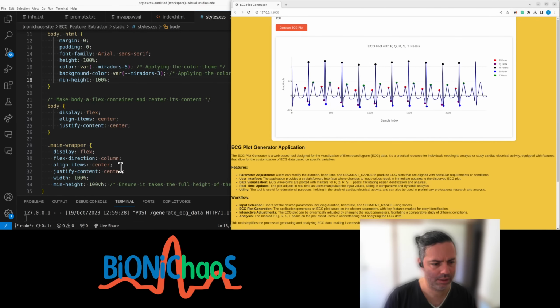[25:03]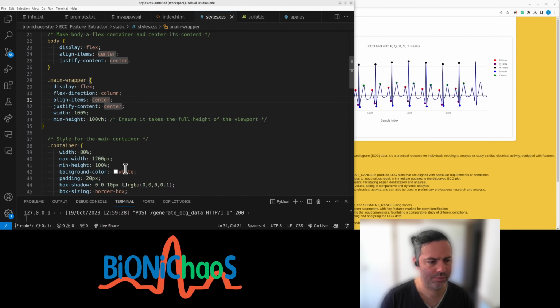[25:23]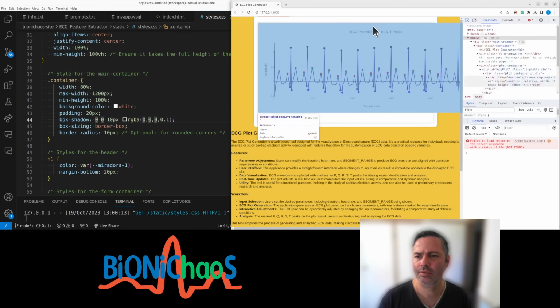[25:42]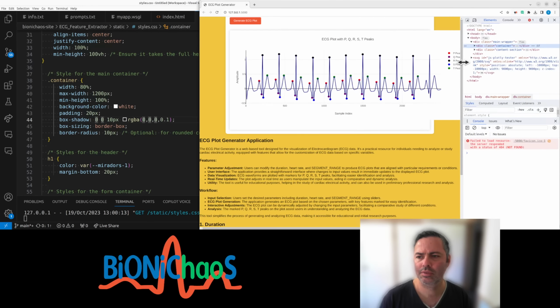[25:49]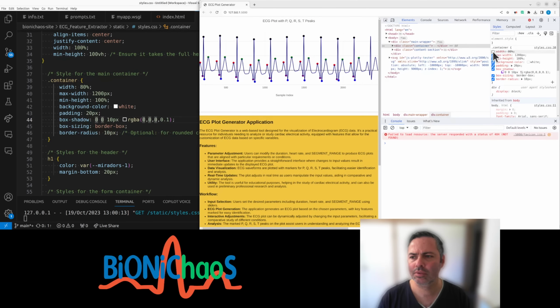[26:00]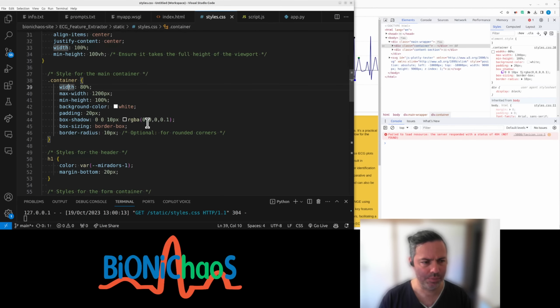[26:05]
Okay, I meant to write how to fix, but I already sent it. Okay, the main wrapper. Display flex, flex direction column, align center, justify center, width 100, min height. It's for rounded corners. A form container. That hasn't changed. Nothing has changed. So what's the problem? The edit this one didn't comment it. Oh, come on. That didn't help. Okay, this width can be commented out.
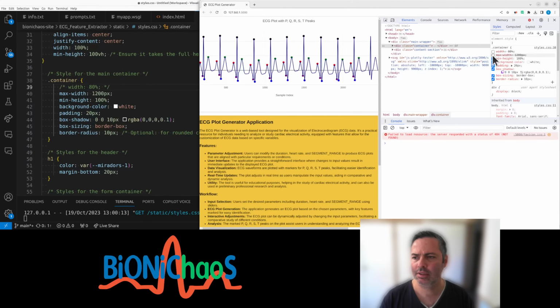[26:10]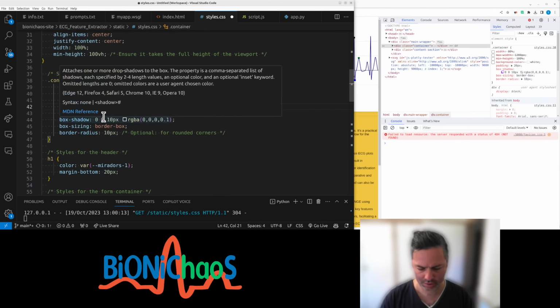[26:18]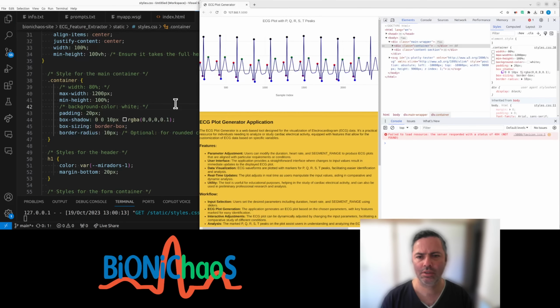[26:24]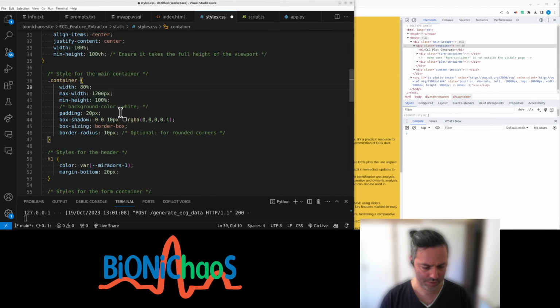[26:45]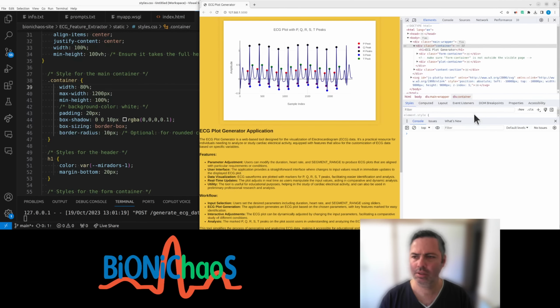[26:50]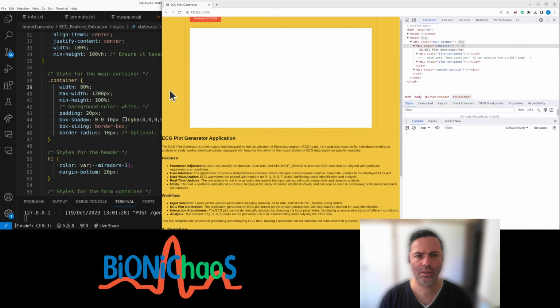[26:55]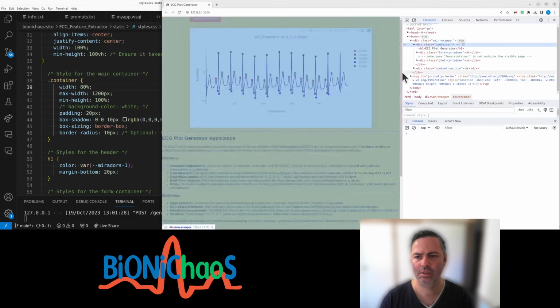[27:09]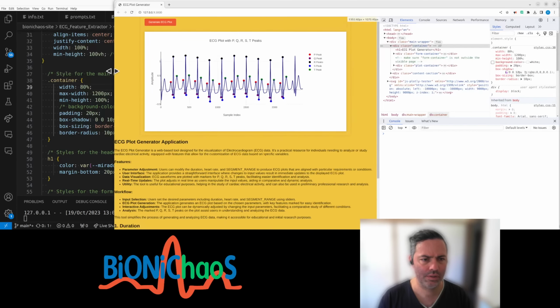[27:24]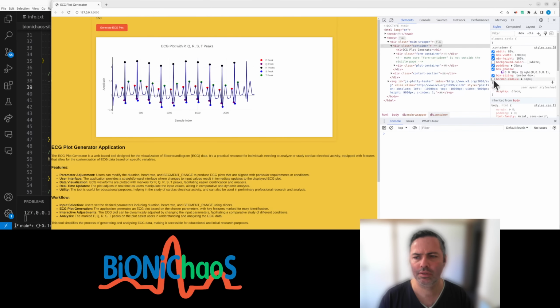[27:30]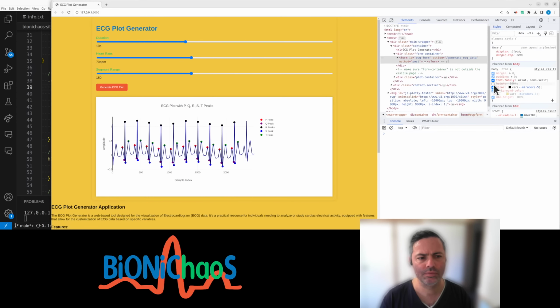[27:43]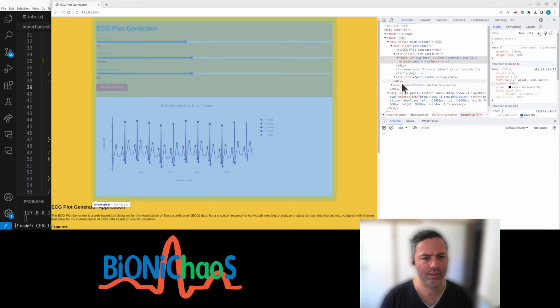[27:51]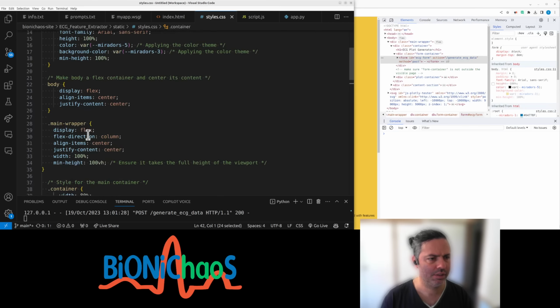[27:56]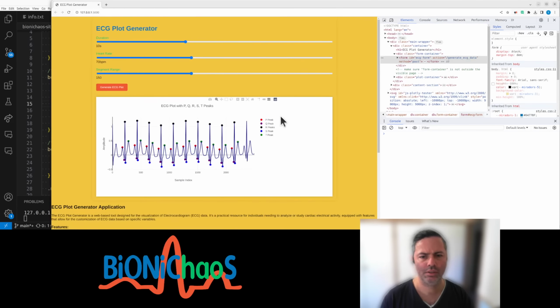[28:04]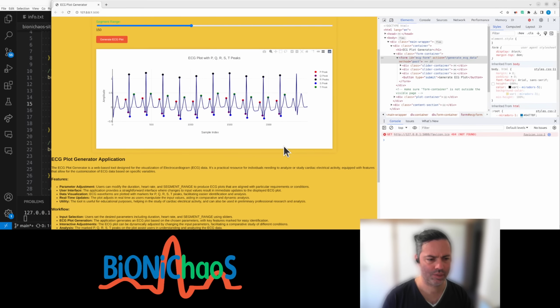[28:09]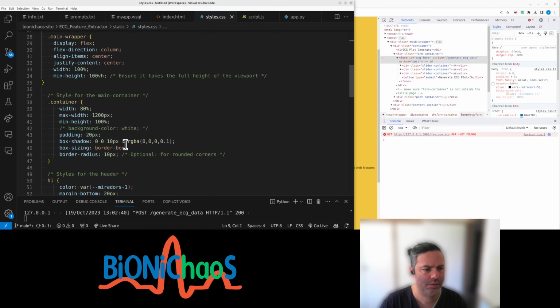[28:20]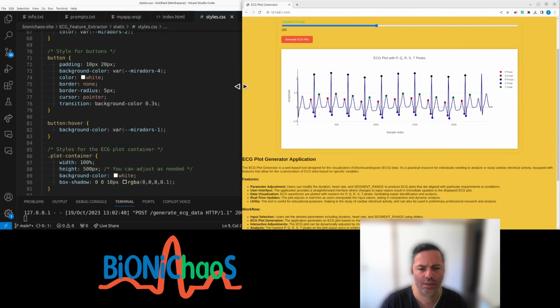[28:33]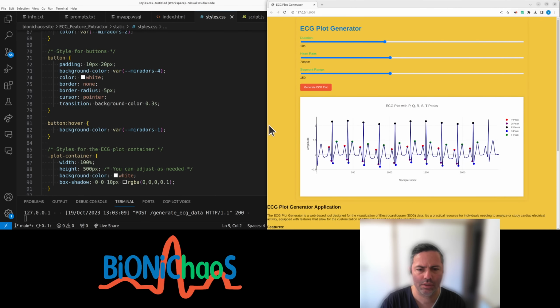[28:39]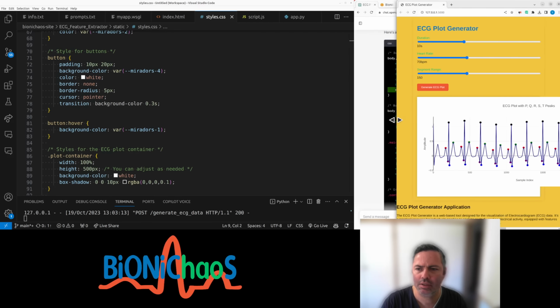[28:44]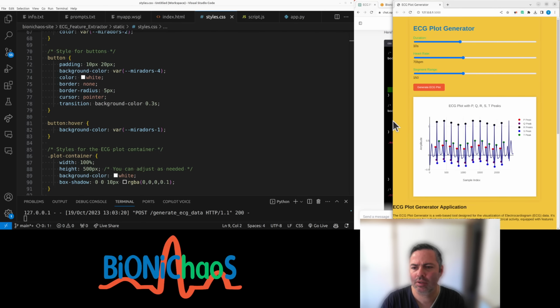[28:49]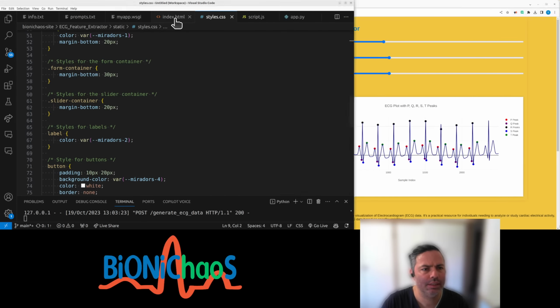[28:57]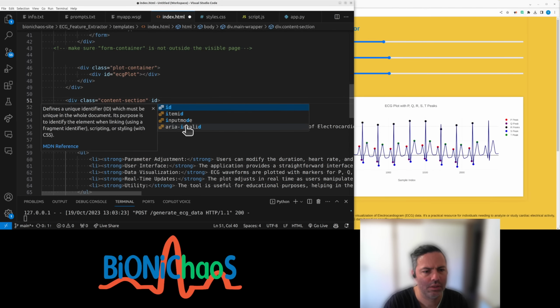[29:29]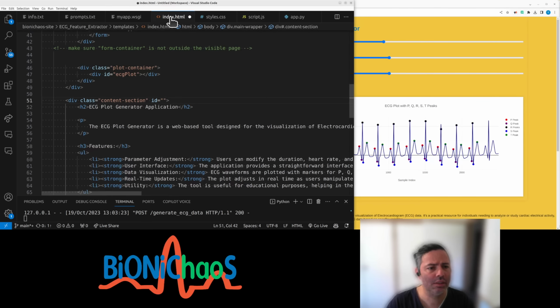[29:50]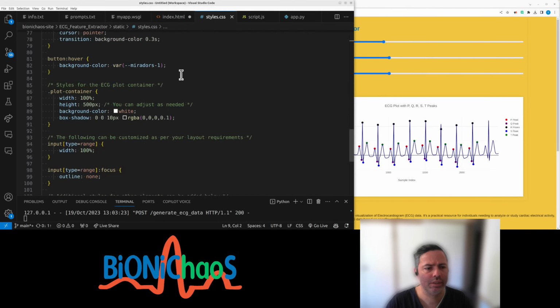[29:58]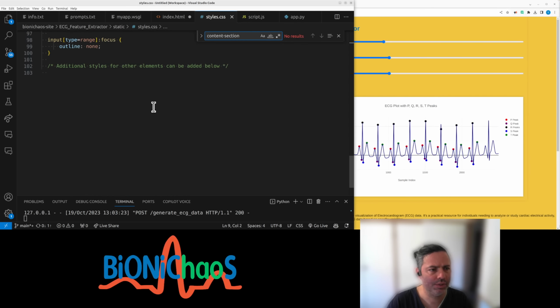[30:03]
This max. Let's actually change anything. Right. So in the body, height should not be 100%. Container, form container, slide container. Oh, the favicon is okay. Right, this is better. And in index HTML, what's this called? Content section. Still an ID. How does ID? What container? A content section.
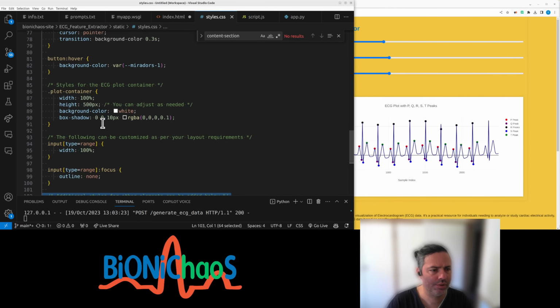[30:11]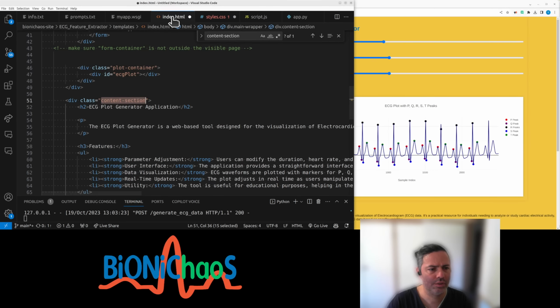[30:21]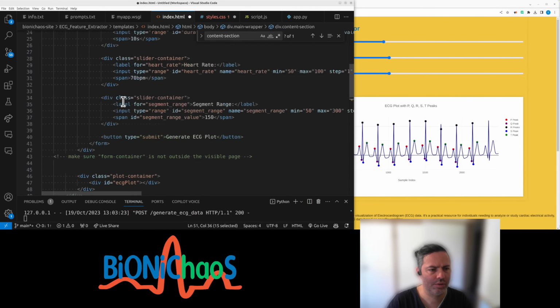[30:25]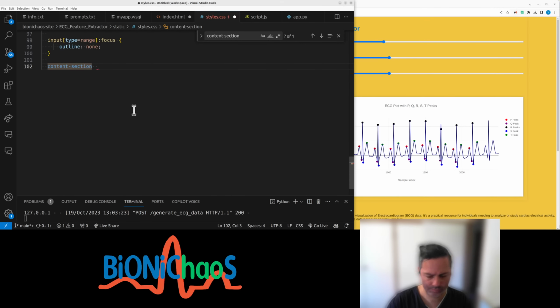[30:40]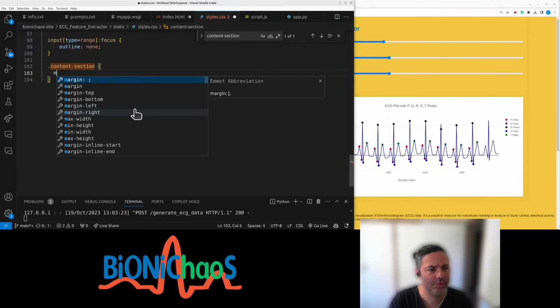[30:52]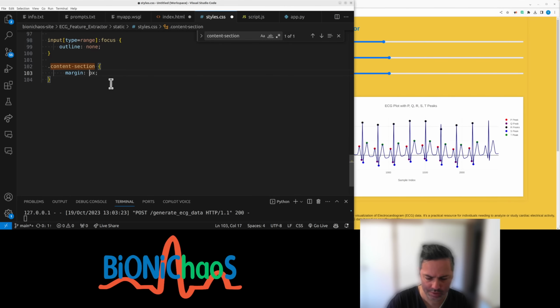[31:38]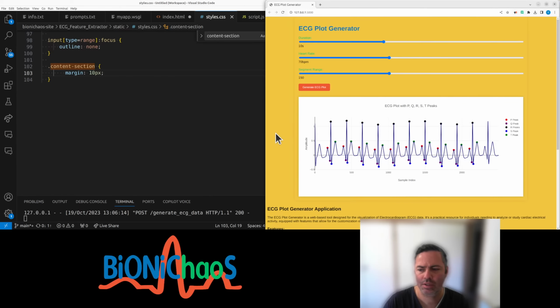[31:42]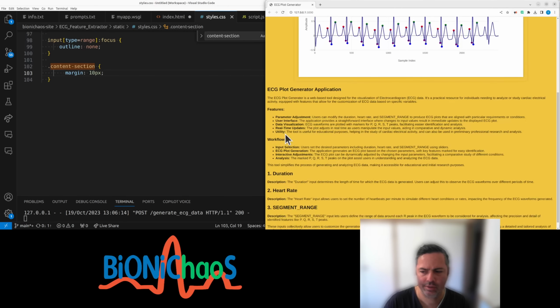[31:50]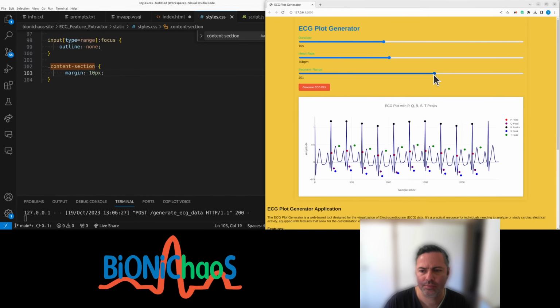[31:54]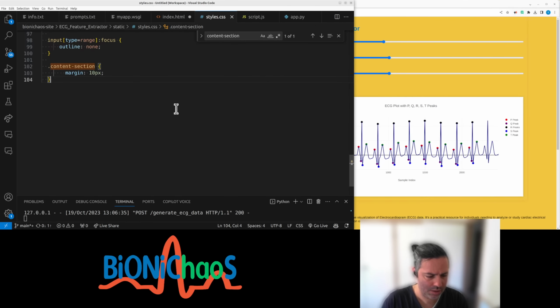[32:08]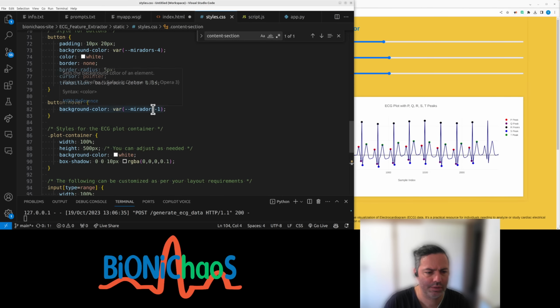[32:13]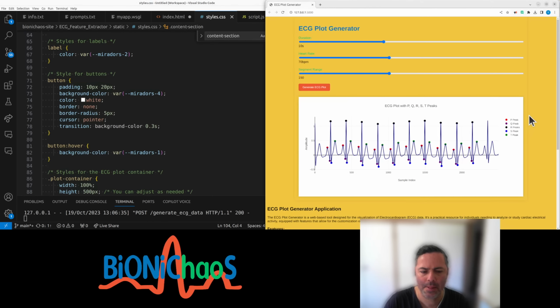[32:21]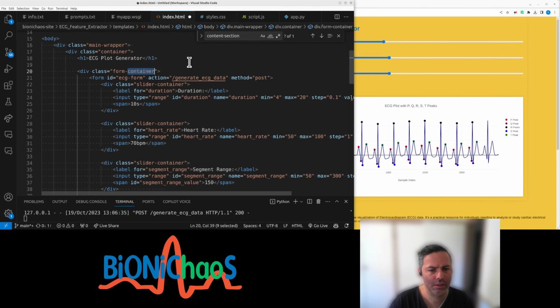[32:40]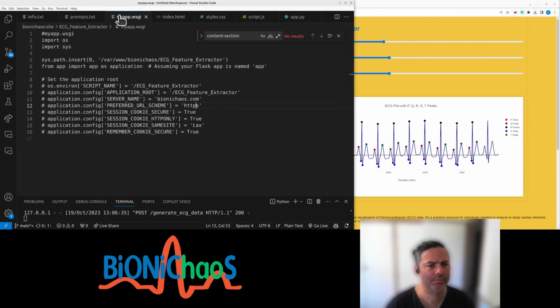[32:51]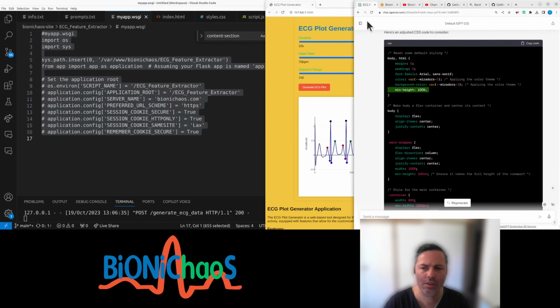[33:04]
So we have the tool up and running. Shall we publish this quickly? Let's pop this in. Let's pop this into the chat as well.
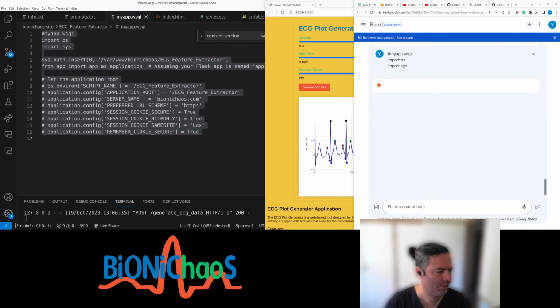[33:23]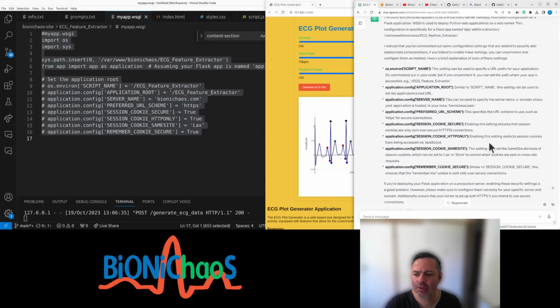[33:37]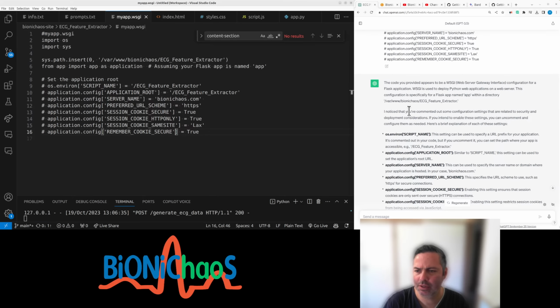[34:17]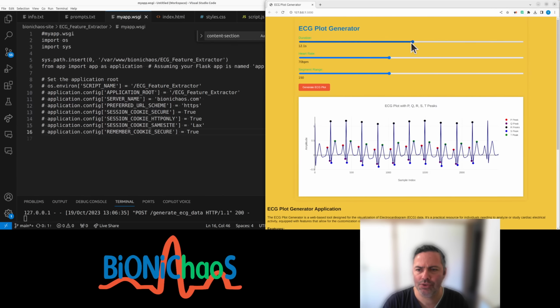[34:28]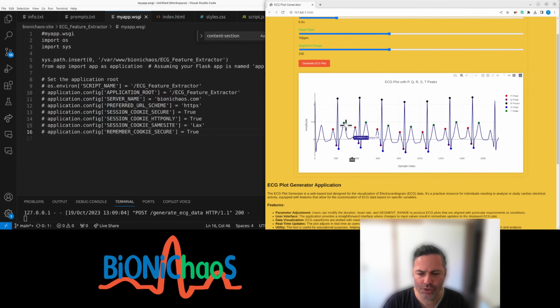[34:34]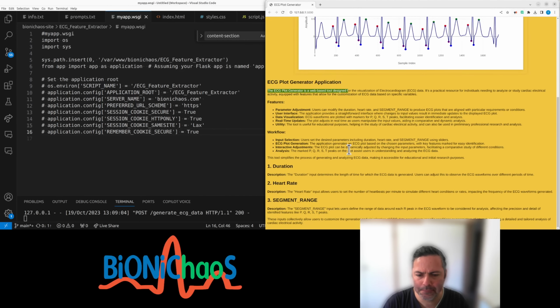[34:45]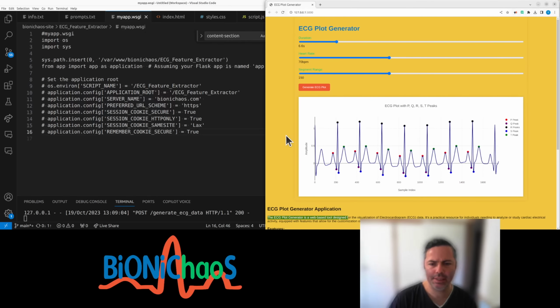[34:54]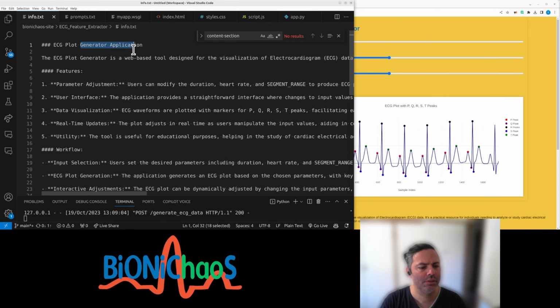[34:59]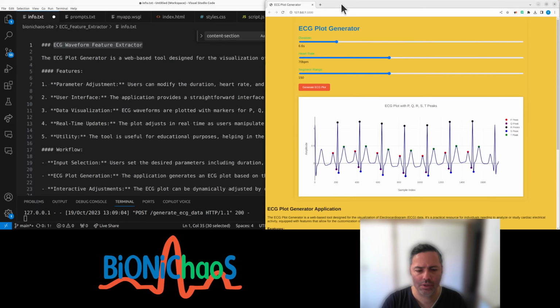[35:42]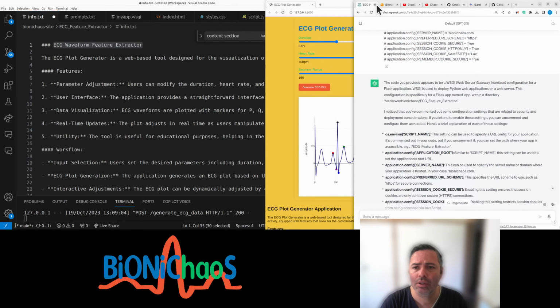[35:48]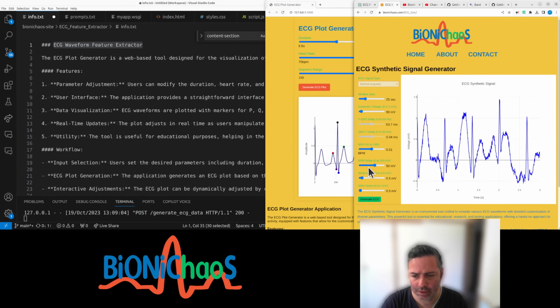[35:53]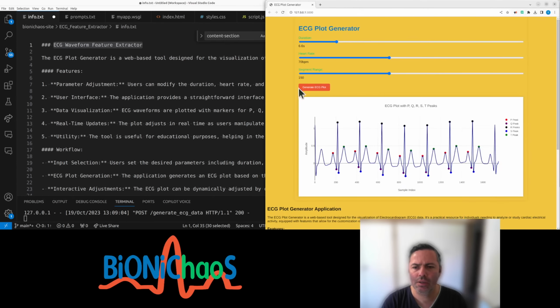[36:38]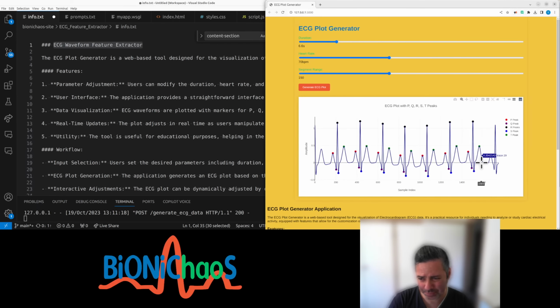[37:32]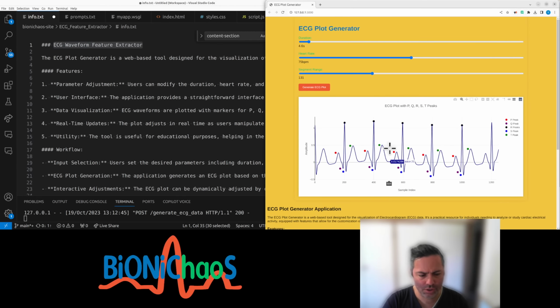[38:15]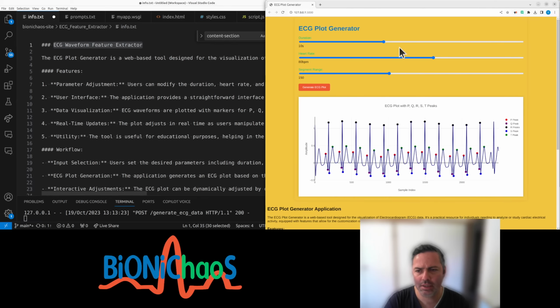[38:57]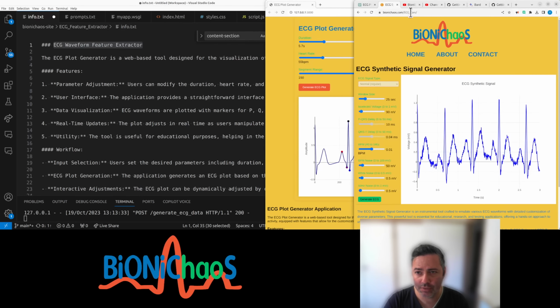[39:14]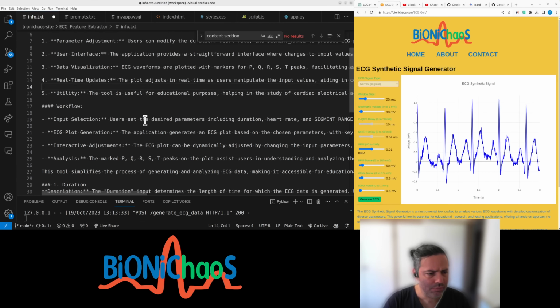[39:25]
Oh, thank you, Joel, for pointing that out. There should be audio. I was coughing before and muted my microphone and forgot to unmute it. A common thing during, was it the COVID thing? Oh, your microphone is muted. It's probably the sentence of 2021.
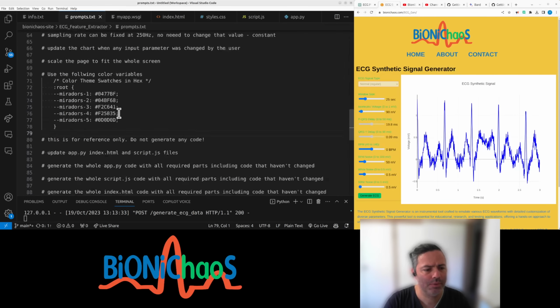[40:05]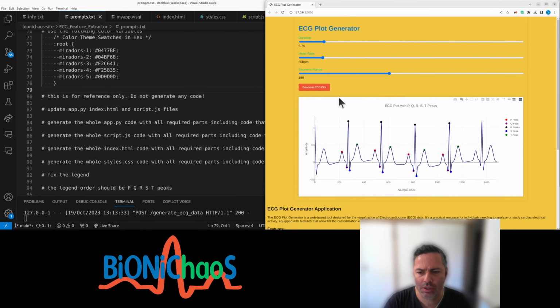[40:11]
So we covered those prompts previously for this new tool. It looks the same, but there's a subtle difference: this one's actually labeling the different ECG components.
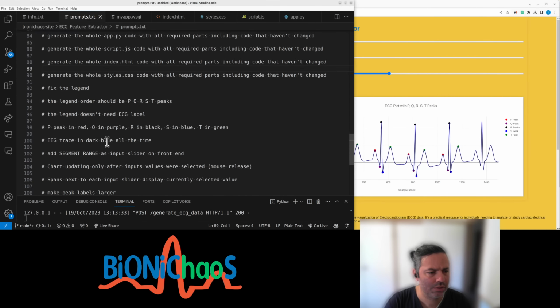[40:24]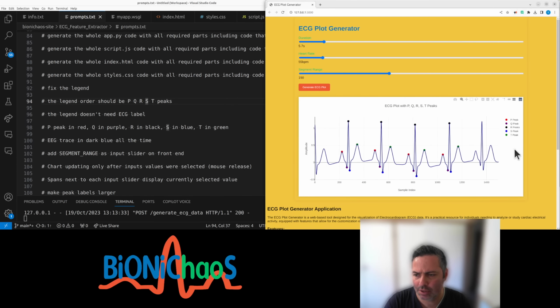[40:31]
So yeah, we used those prompts before. This seemed to work. Yeah, we fixed the legend. It was repeating the same thing over and over again. Now it just has the PQRST as it should. This thing also will not keep generating a new chart unless you actually release the mouse. So that's handy because you don't want my server to unnecessarily work too hard.
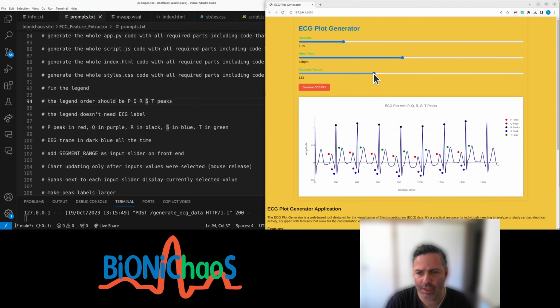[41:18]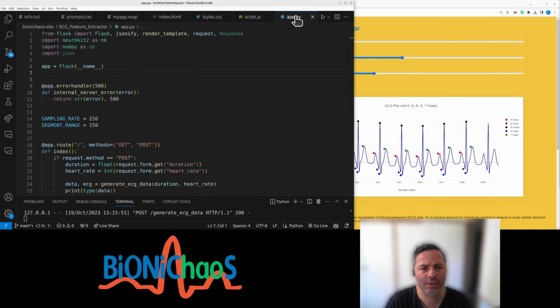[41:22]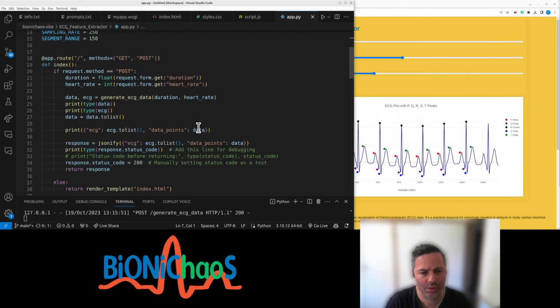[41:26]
Yeah, heart rate works okay. Yeah, the x-axis could be fixed. It should be actual seconds, but yeah, those are samples. And yeah, segment range, can actually see how the algorithm is working. It's the code. So all the code is in this Python script, which
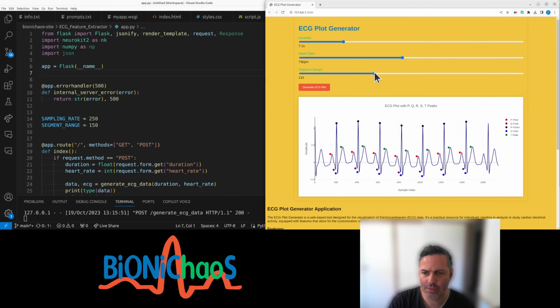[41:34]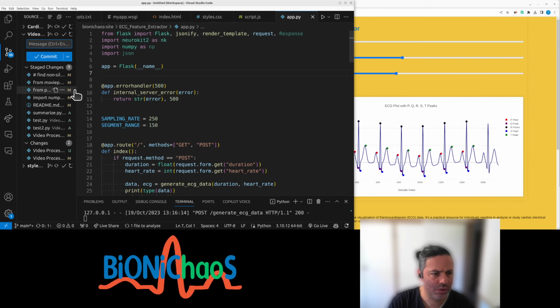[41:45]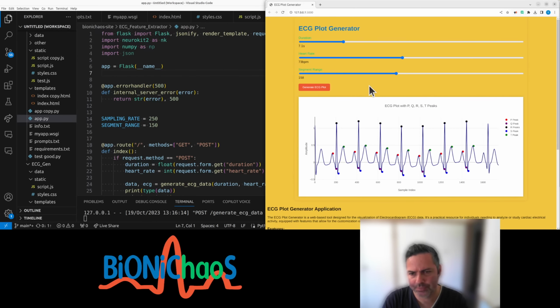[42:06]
well, it's normally just available on my website. I kind of prefer my website over GitHub, but yes, we will push it to GitHub as well. Let's actually have all those commits, GitHub stuff that still needs to be pushed out. But yeah, I just didn't have that time to go over it. But yes, it is on my website.
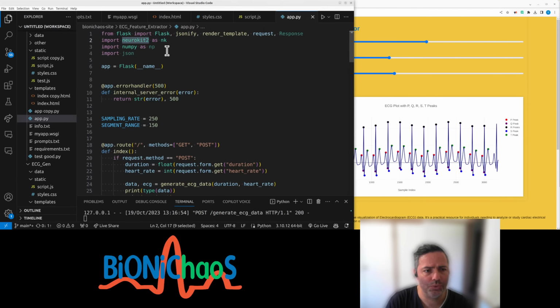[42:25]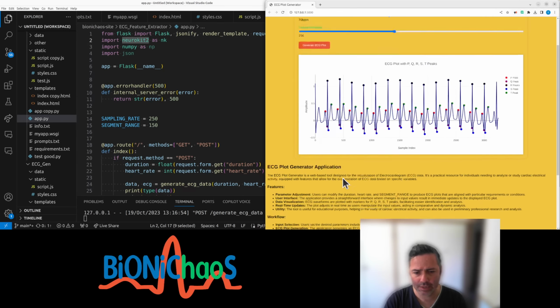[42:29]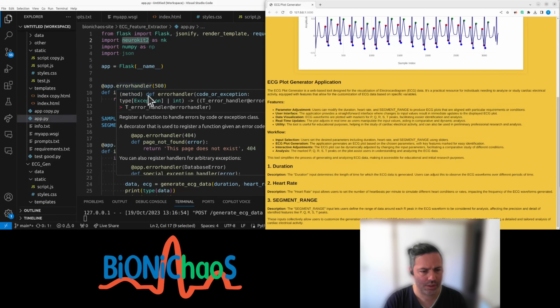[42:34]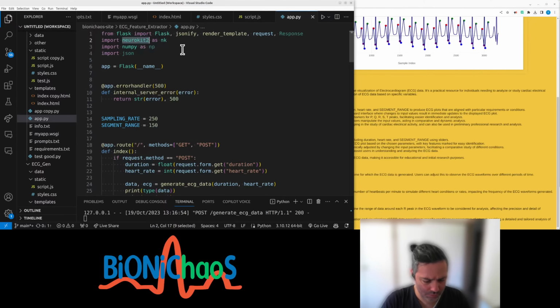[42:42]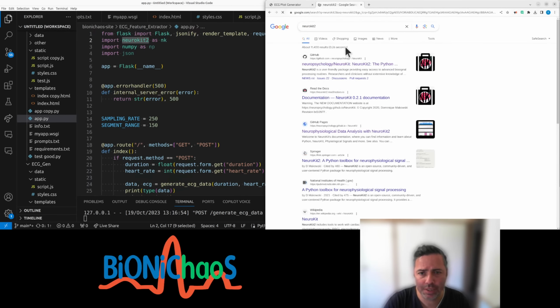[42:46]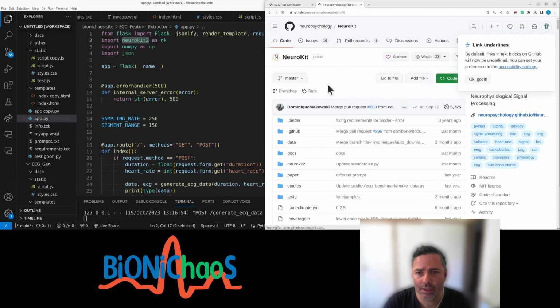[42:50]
Yeah, you can refresh the page for default, and these buttons just with the same parameters. You could be generating more signals. And actually, there is some noise in it. We're using that Neurokit2. You can go and check it out. Actually, we should have a link to it in the description there. I don't know why it is not there. Let's fix it up. Because there's a proper way of referencing the Neurokit.
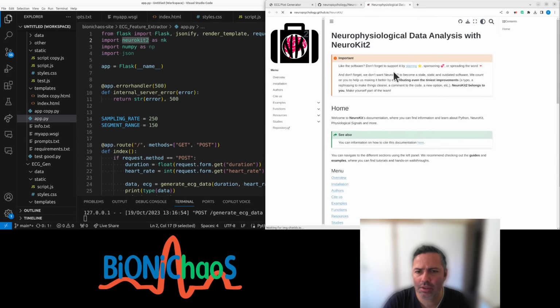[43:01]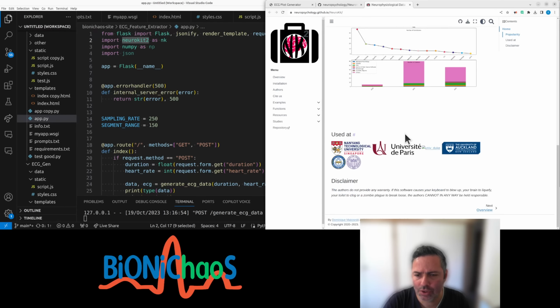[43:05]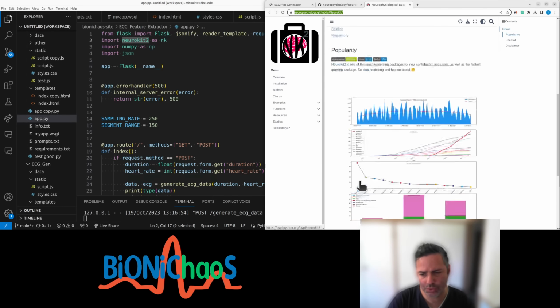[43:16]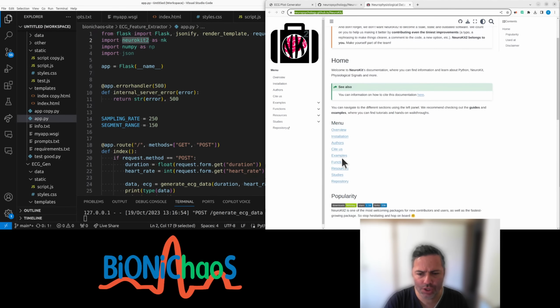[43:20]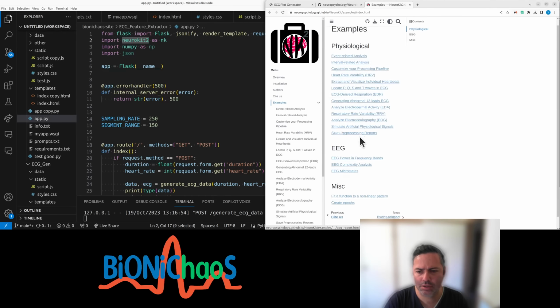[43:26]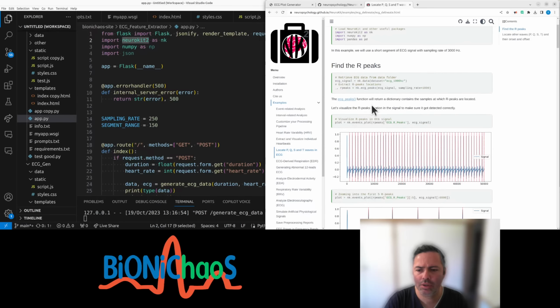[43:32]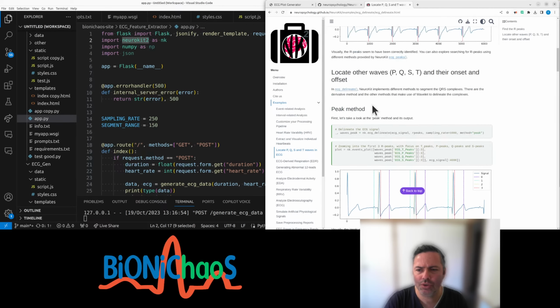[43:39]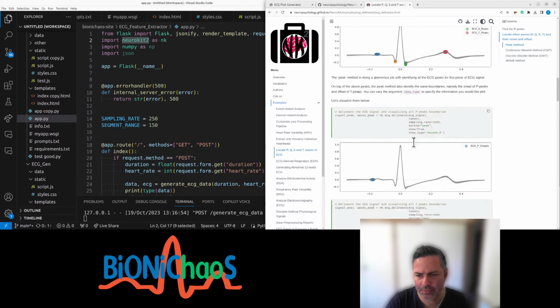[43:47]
There's actually a page. Yeah, they actually have their own page. neuropsychology GitHub. So that's the one we're using to simulate the ECG, and that's also finding the peaks. Should be some. Right, we're actually not using that one. Didn't actually realize it has that option. I thought it's only finding the main peak. This actually looks much better.
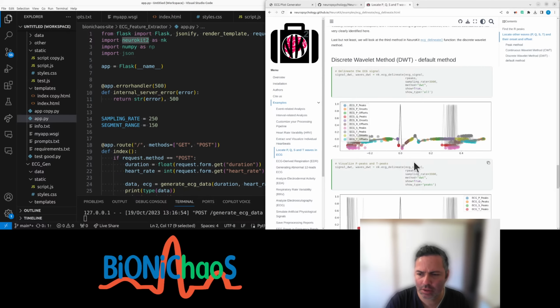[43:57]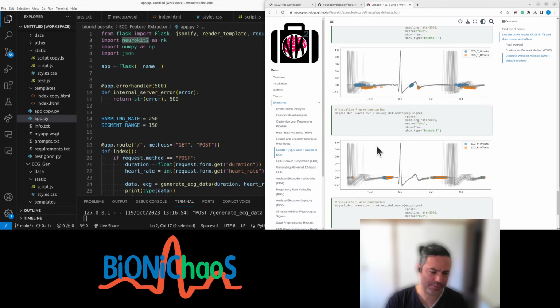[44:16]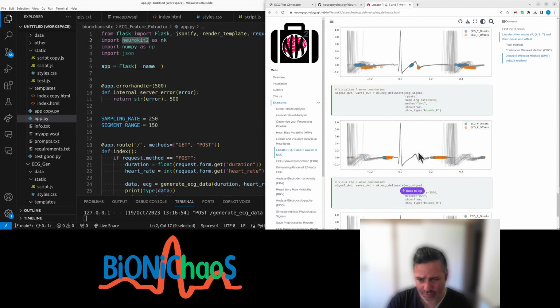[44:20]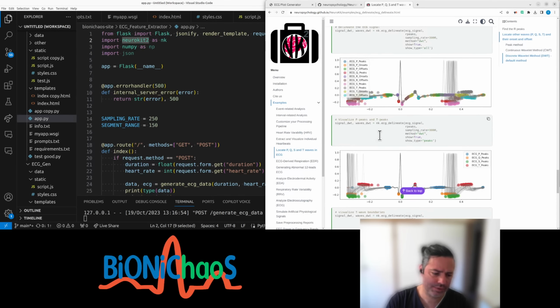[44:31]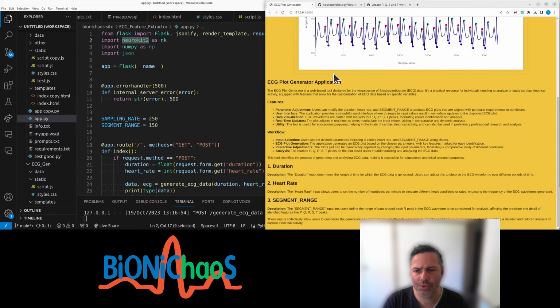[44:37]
Yeah, this is also nice when the PQRST, just multiple of them overlaid on top of one another. Then you can see the variability in them. So instead of time domain, it just overlays multiple complexes in the same window and then shows you variability of different parts. It's a nice little toolkit. So we are using it, but only for generating the ECG and finding the R peaks, so the black dots there.
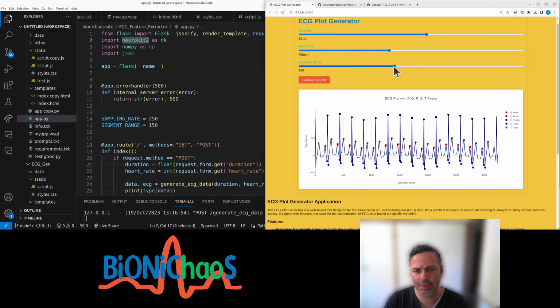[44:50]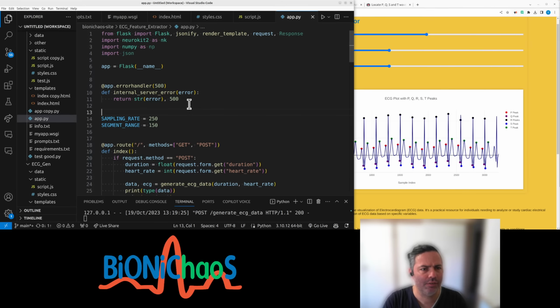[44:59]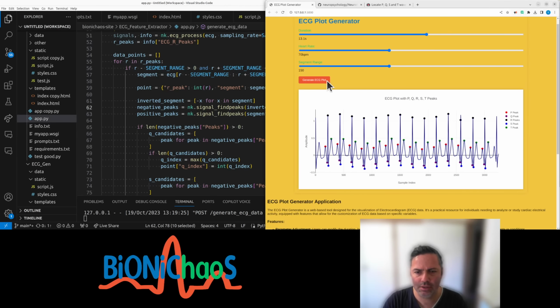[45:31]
The P, Q, S, and T are found using a different algorithm. Pretty simple thing. We're just looking at range, and if there's a peak or a positive peak and a negative peak, that's all it does. So pretty basic. Yes, there are thresholds. Actually, should have turned this into a variable and had an option to change it as an input, but we might do it next time. We'll release it first and go from there.
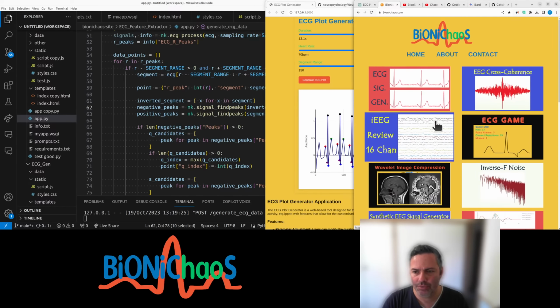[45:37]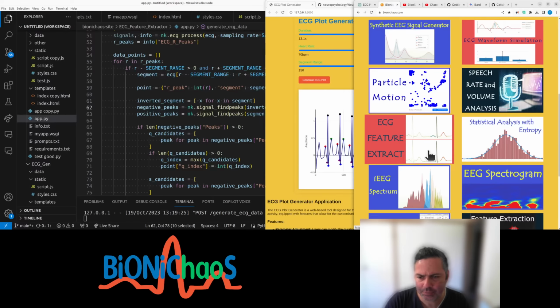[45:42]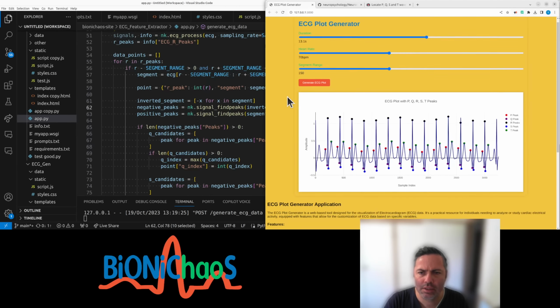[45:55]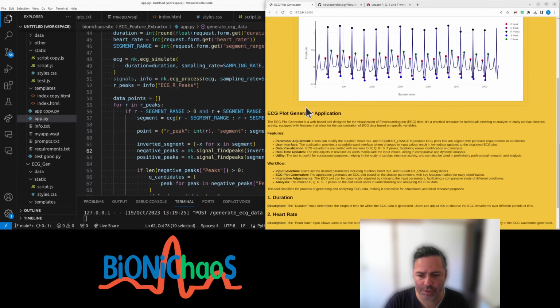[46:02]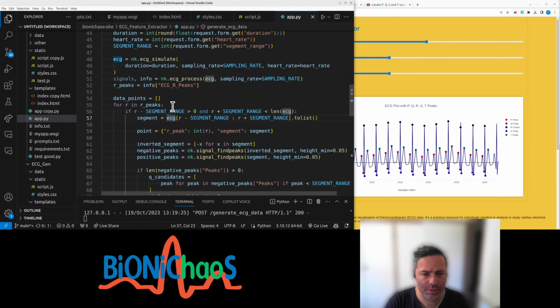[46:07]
Mainly because there's still a bunch of tools on the side that we have to get working again. Probably this neural net signal prediction, waveform prediction will be next in line. I don't know if there's any questions or any suggestions how to improve this or what's missing. Please do let me know.
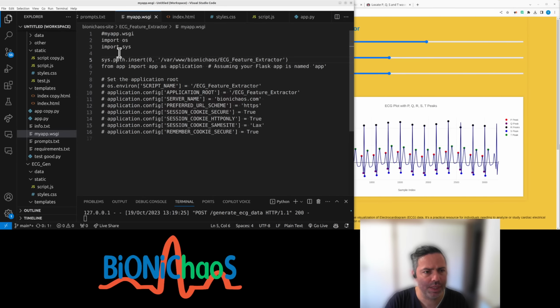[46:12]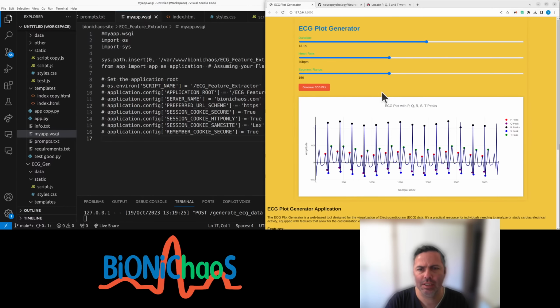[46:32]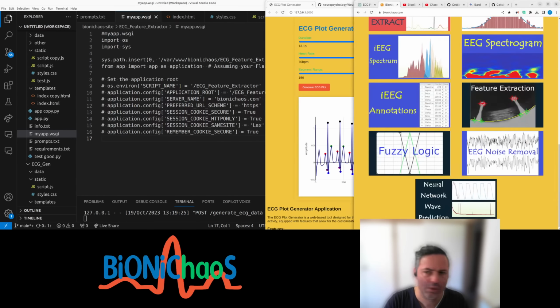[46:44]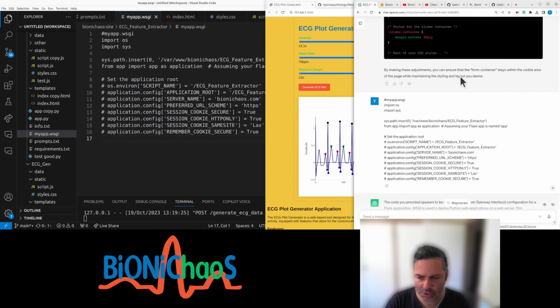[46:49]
Where were we? So we had this one thing is I don't understand how to use GitHub Copilot properly. So we kind of still using GPT 3.5. My subscription to GPT-4 expired yesterday. So we have this file. It's the gateway interface for the web server. Should know how to do it by now because we already have quite a few Flask applications running on the server, but I don't remember how to do it. That's the problem of using a bot, because it's doing everything for you and then you don't actually know how to do it yourself.
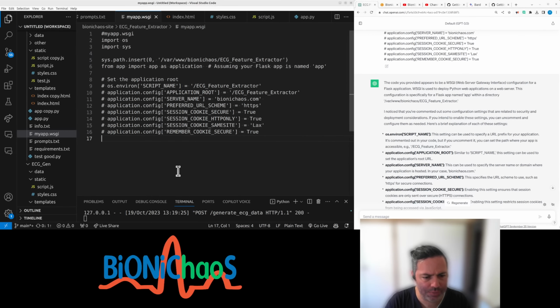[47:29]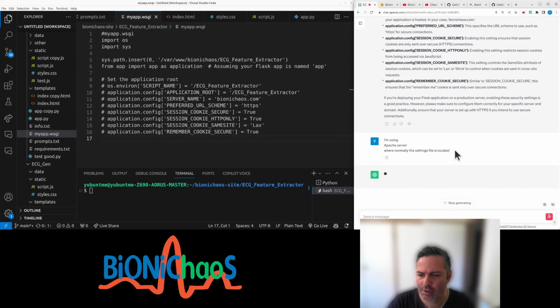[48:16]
But let me see. Well, first we obviously need a terminal. We can use this terminal. And no, we need another terminal. Open with integrated terminal. Now, something I need to do on a separate screen is open. I'm using, what's it called? Oh, Apache server, where normally the settings file is located. And let's pop it into Bard as well, because I'm kind of sick of ChatGPT.
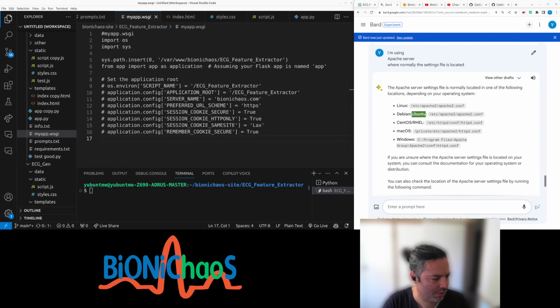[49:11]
No, so we're not using Heroku. Yes, we're using Ubuntu. And no, that's the main settings file. There's a neat tool called Jupyter Lite. Yeah, I'm trying to minimize use of external tools for that matter. Trying to do everything locally. Keep everything in Python. Okay, so why do I need another tool then? Yes, it sounds like this is the basic kind of thing.
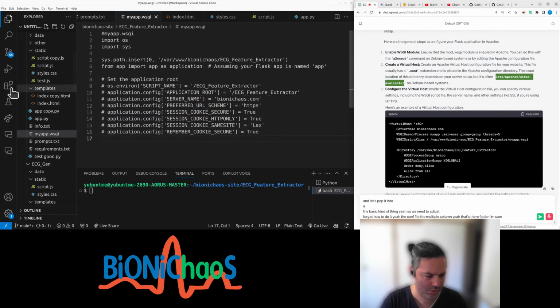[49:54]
Yeah, so we need to adjust. Forget how to do it. Yeah, the conf file, the multiple colon. Yeah, that's the folder, I'm sure. I'll just do it on a separate screen just for safety reasons. So go into that folder. Yeah, we have a bunch of those configuration files. Yeah, we need this one.
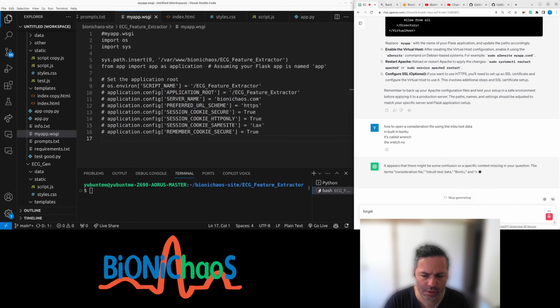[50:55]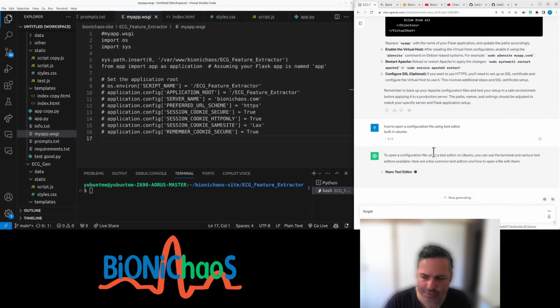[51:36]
And I forgot how to open a configuration file using the inbuilt text editor in Ubuntu. What is it called? Text Reg? No. Forgot. Oh, come on. The speech to text doesn't work very well. This is meant to be a configuration file. That text editor built in Ubuntu. Yeah, it's like every time you're doing something, there will be another tool that you have to use. Not Vim, not Nano. Yeah, this one, gedit. That's the one.
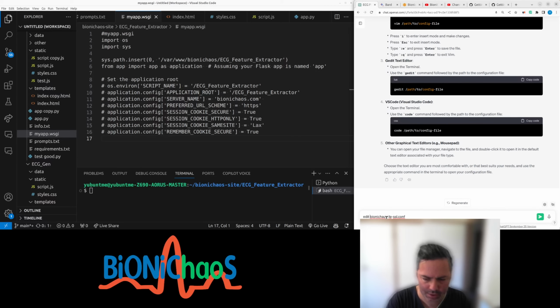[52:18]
So I need this and of course I need the sudo. Is it sudo? I always stuff this up, so I need to get it right so it works the first time around. So this is what the configuration file is called. Edit with sudo and gedit, file called this. Need the line because I'll mess it up myself. Yep, that's the one.
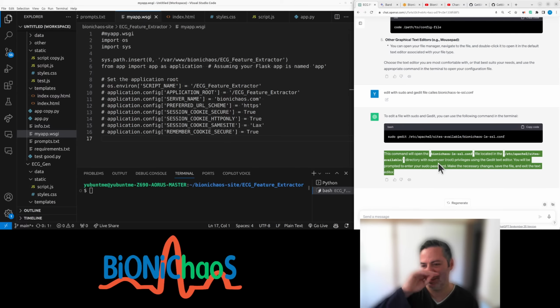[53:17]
Yep, password. I wonder if he can get somebody's password from audio when clicking the mouse and stuff. That would be a neat little project if anyone is up to it. Detecting keyboard clicks.
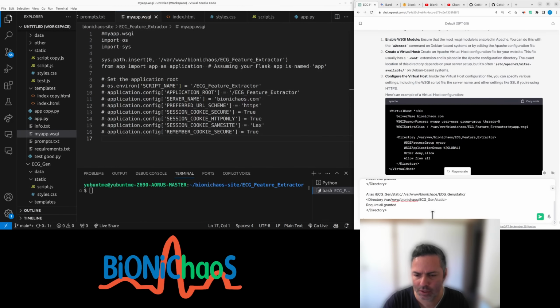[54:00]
Yeah, so I'm using 443, so it should be HTTPS. That's fine. I have all the certificates, and I have some other Flask applications there already. So essentially, yeah, using 2 threads. So this is an example. This is an example of a previous Flask application that is working okay.
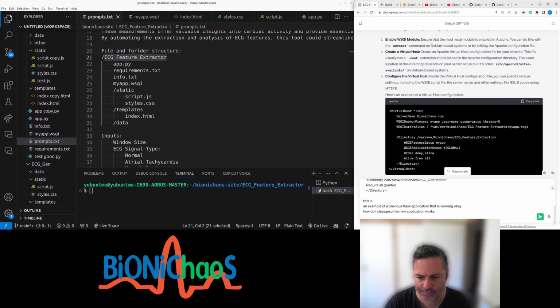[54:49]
How do I change this so the new application works? And the application is called, so we have these prompts and this file and folder structure. The application is called ECG Feature Extractor. ECG Feature Extractor.
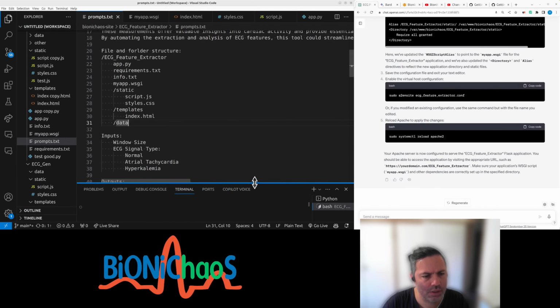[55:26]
I don't know why I keep using ChatGPT. Should really move to Bard. I was trying to. I don't know if Copilot can do things like that. I have it running, paying, but I'm not actually utilizing it properly. Don't know how to use it properly.
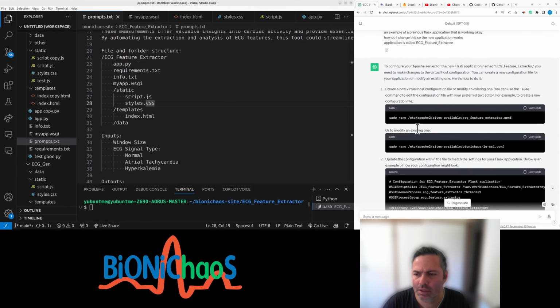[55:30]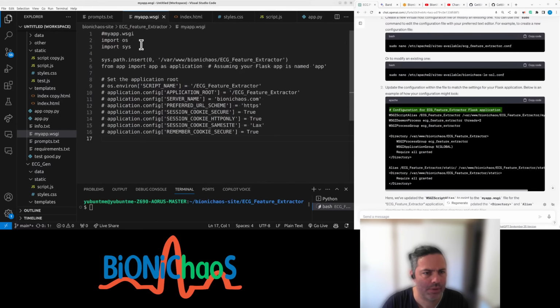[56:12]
Right. So we're editing the file, and we need to add this. Let me check. Let's just copy this. Ends in directory. This file, yeah, it's called my app WSGI. We give it 2 threads for this web application, Flask application. Yep, that's correct. Just checking the folders.
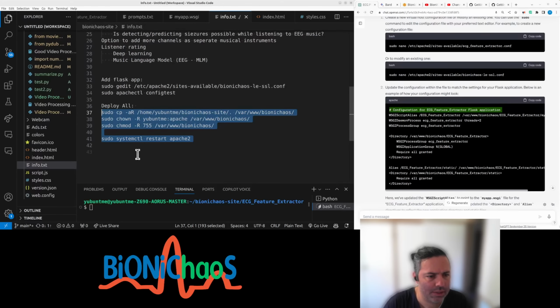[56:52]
Right, and we need to deploy it still. How do we deploy it? Yeah, we had this deploy all, copying it to the server, changing permissions, restarting the Apache server. First, right, I had the line here, so I didn't actually need to search. Didn't need ChatGPT to tell me that I already had it, but yeah, we'll save. We'll do a config test.
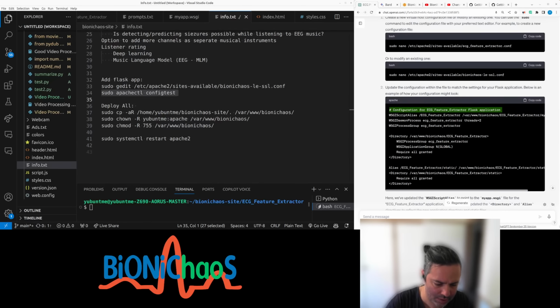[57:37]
Password again, because our server is super secure, isn't it? If you still manage to hack into it, please let me know how you did it. We will do those.
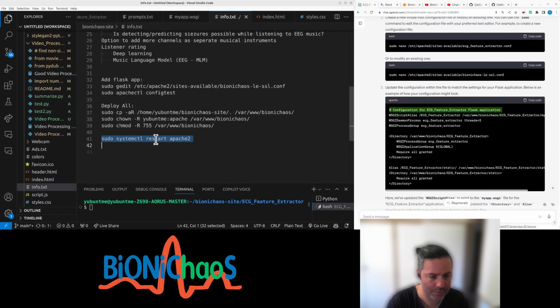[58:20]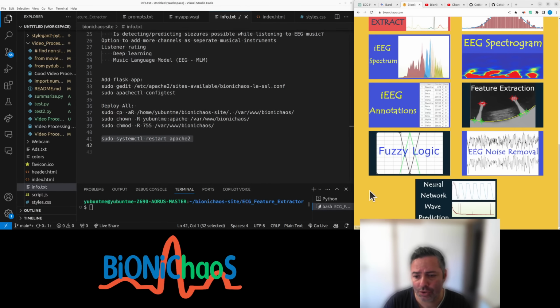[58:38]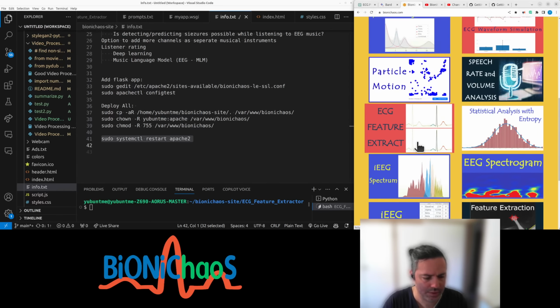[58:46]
So that's what I'm saying. All these files are on my page on the website. I'll show you in a sec, because I'm essentially deploying the whole project. So this is the whole Biomedical project with everything developed so far, any plans, any files, and they're all on the website. Should be accessible for you to play with. Fingers crossed. So the site is still working. We might need to go to Cloudflare and move to development mode.
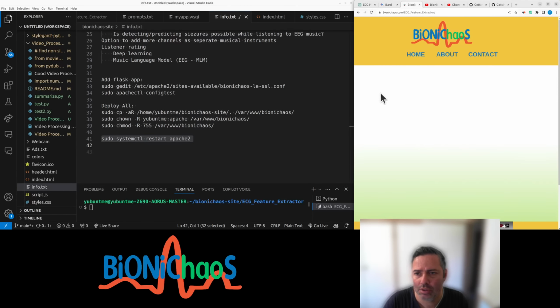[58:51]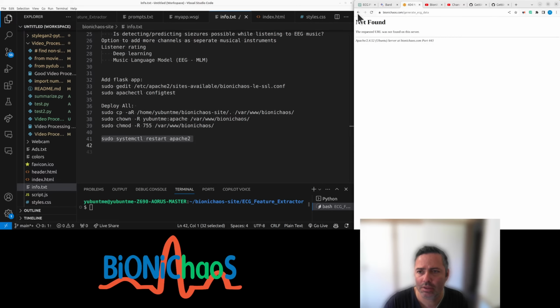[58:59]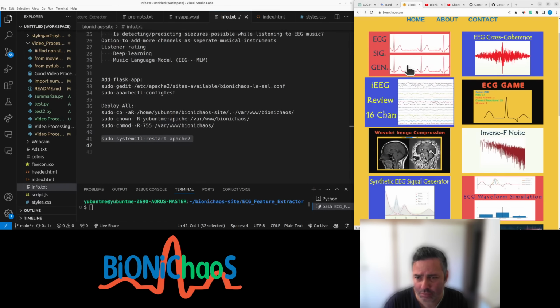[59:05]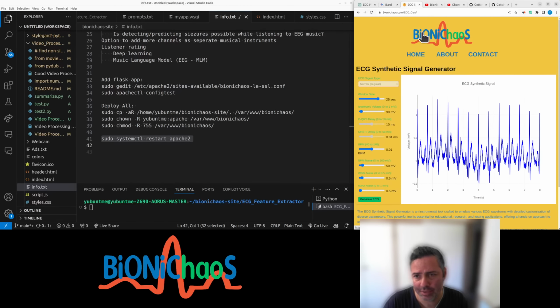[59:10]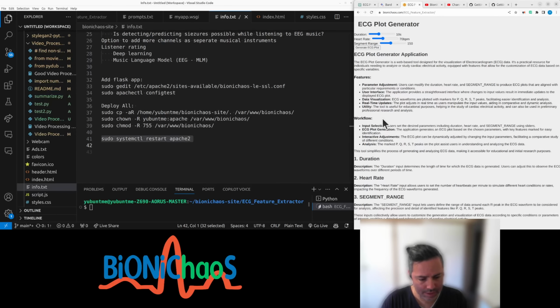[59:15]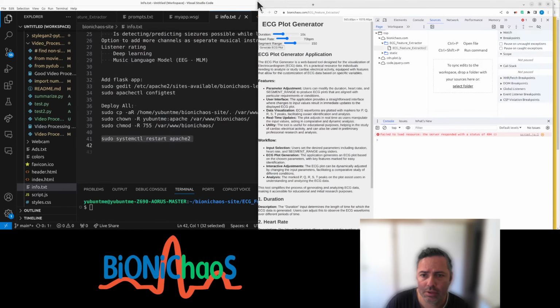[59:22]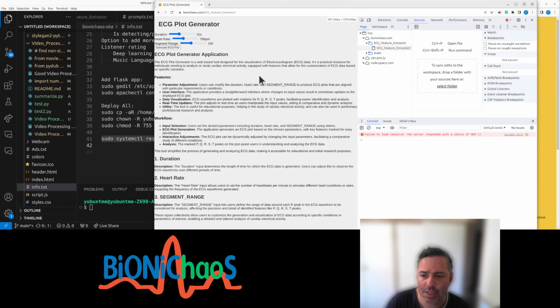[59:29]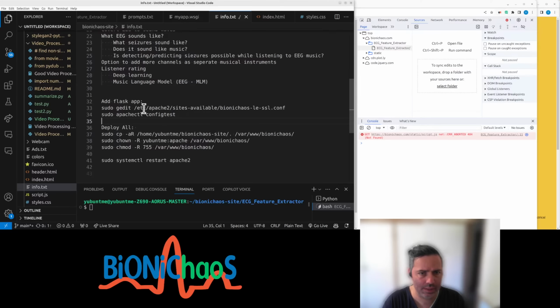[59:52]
Right, so there's a few problems. What it looks like. That's the previous application, and this is the current one. So obviously we're having a few problems. Yeah, I think I know what some of these problems might be. Script.js didn't work. Right. From memory. Let's see. So this is okay. This file is fine. Our Apache server is working, so you can actually access the application. That's okay.
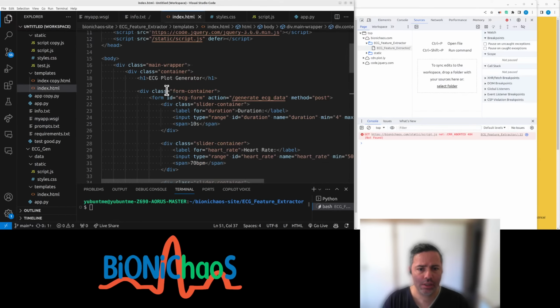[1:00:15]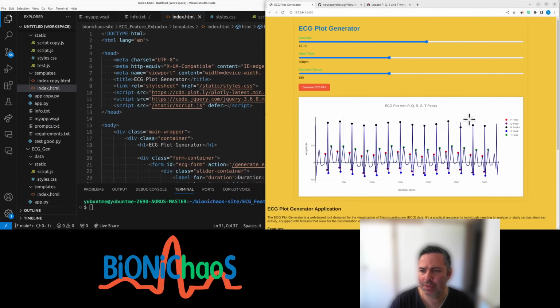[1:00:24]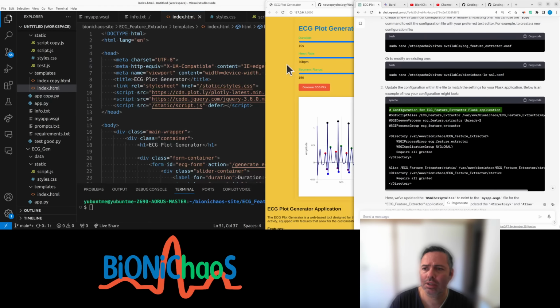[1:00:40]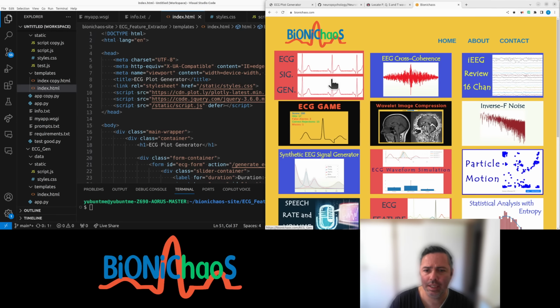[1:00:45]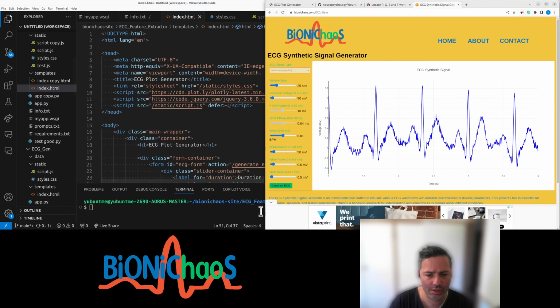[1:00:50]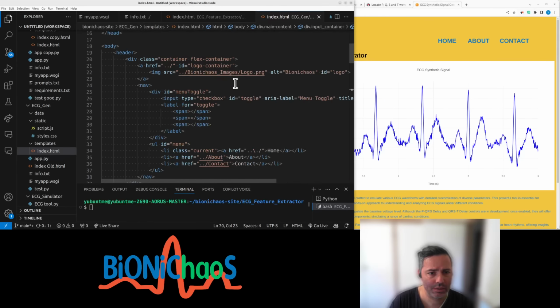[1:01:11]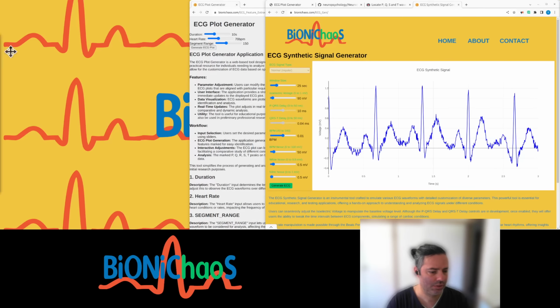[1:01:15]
Now, a couple of things. Actually, what was the previous application called? Ah, this is still running locally. This is just locally. So that's how it should look like, but it doesn't look like that yet. Let's see. So this application is called the ECG Gen. Sorry for the ads. ECG Gen. JavaScript. Right. We need this bit. Whoops. Just trying to maximize it and open on a different screen.
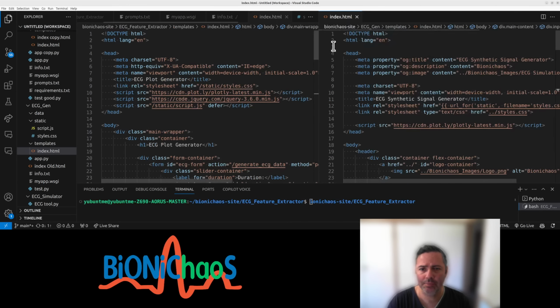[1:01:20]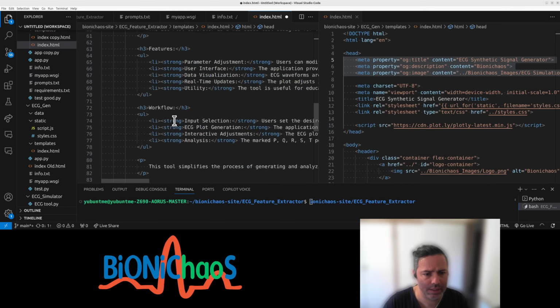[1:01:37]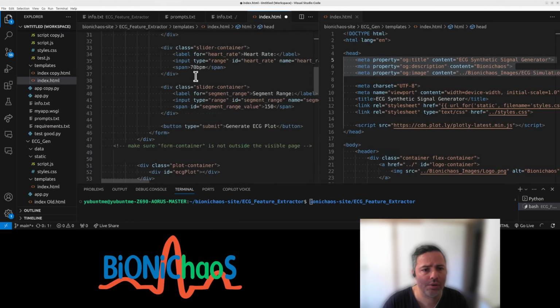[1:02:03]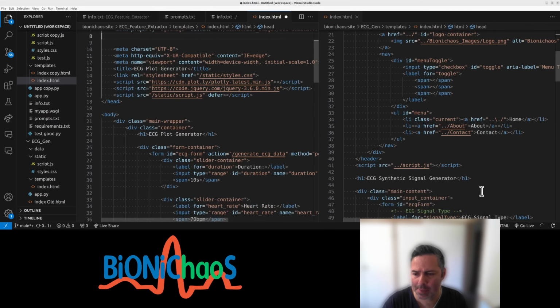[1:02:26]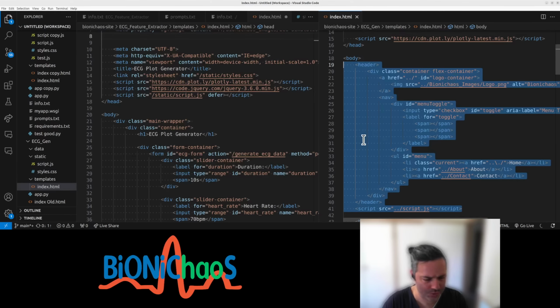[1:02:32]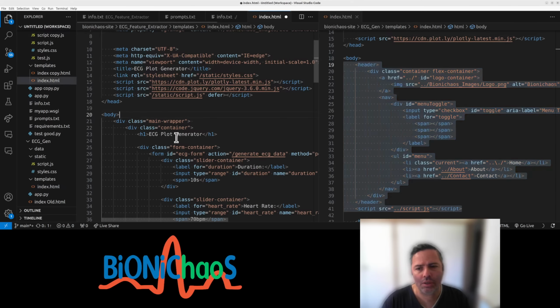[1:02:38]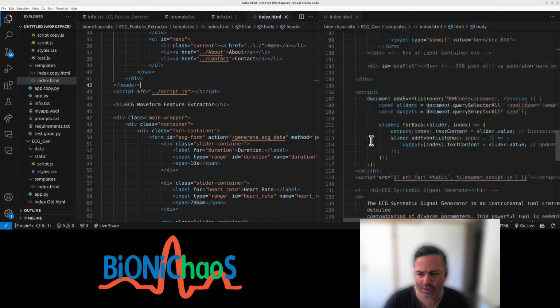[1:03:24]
So we need a few bits from, yeah, pop those in, because I'll forget later. And it's actually called stay info. No, that's the general info. Well, we can close this one. Yeah, feature extractor is the name. Fix that later. And now, so need this header. Including the JavaScript. Just controlling a menu on the page. That's that. Again, it's called waveform feature extractor, not generator. Copy pasting. Copy pasting is a skill, isn't it? But you still have to do it right. Right, that would be it with the HTML.
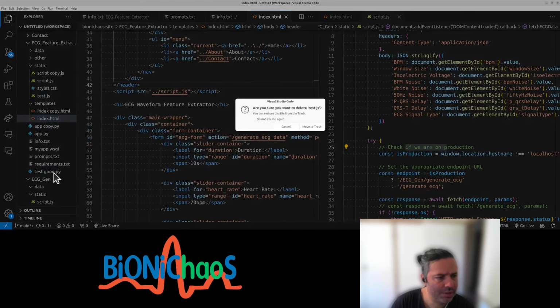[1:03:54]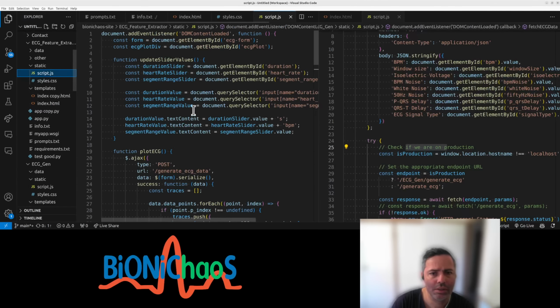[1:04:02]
Now in the JavaScript, yeah, this bit, actually checking if we are in production or not. We can get rid of this. And that one as well. So in JavaScript, I'll stuff this up, wouldn't I? Yeah, we're checking if a call is made from a local server or deployed. So if local is production, because if it's not, then we have to use different folders. Unfortunately, there is no easy fix for this, or at least one that I could find.
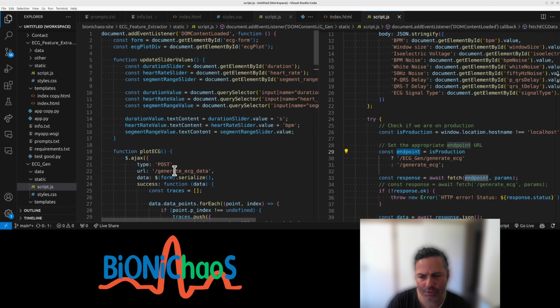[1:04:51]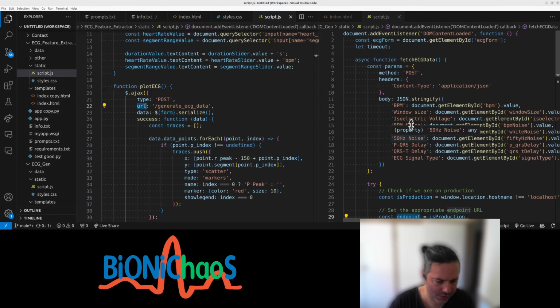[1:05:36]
Why aren't we using fetch, by the way? Going to this URL is not ideal. Ideal would be just fetching data. Yeah, it should be a similar structure to that. So how do I use Copilot to actually change this for me, for example?
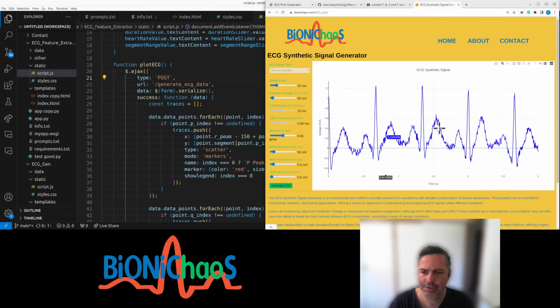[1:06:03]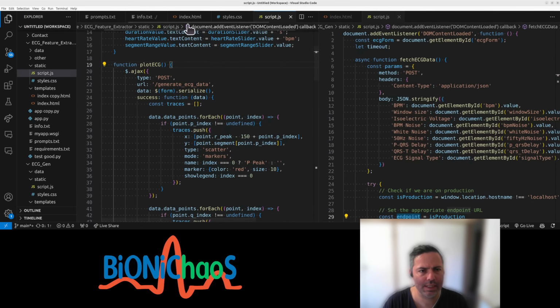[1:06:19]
Yeah, I wouldn't know. We're also going over an hour now, so we'll finish this up. So yeah, go check this tool. It's already available for you to play with. If you have any comments, suggestions, please do let me know. And hopefully this next one, I'll try to make it available later today.
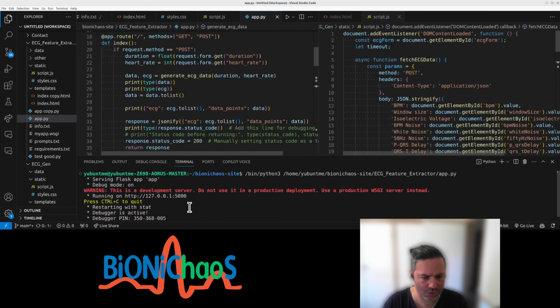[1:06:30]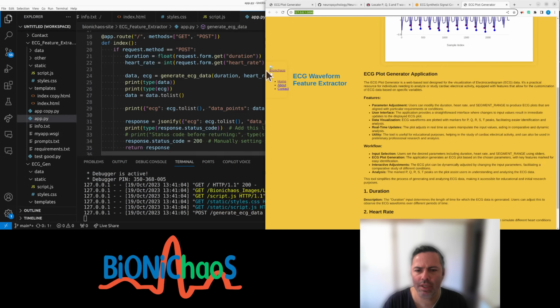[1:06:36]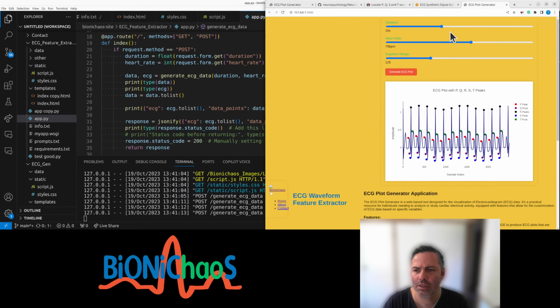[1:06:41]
This is what it should look like. Right, that should be at the top there. Yeah, obviously we'll have to make a few more adjustments. So I'm not sure if I should just take a break while staying online, or just start a new stream later on.
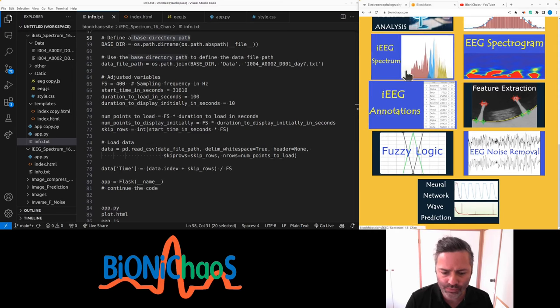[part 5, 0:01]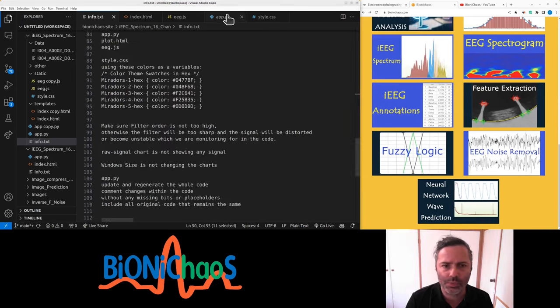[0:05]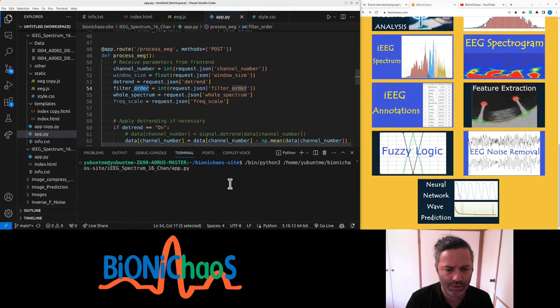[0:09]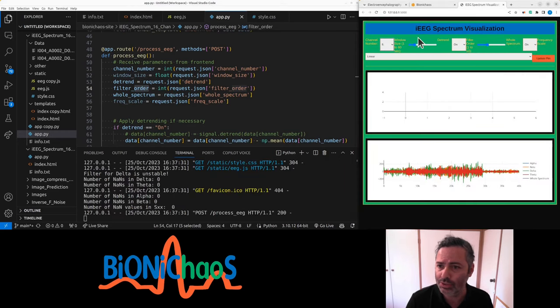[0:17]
So we're focusing around this EEG spectrogram spectrum. We have this app, a Flask application that looks like this. Will it actually execute? Yes. You can select your channel, change the window size, that doesn't work. Turning the detrending on and off.
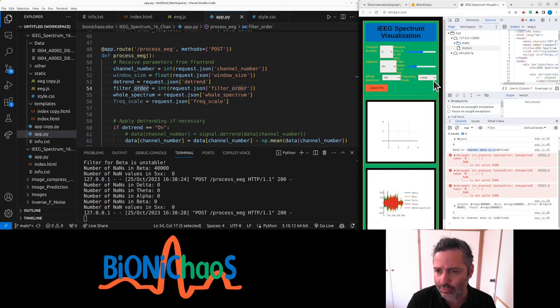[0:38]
Well, the main problem is that we do not see anything. Data channel is undefined. Why? Yeah, if the filter order is too high, we get that as well. Okay, filter order is five. What's the default value? Zero? It's not zero. Yeah, five.
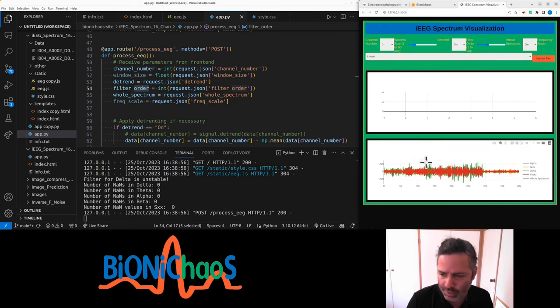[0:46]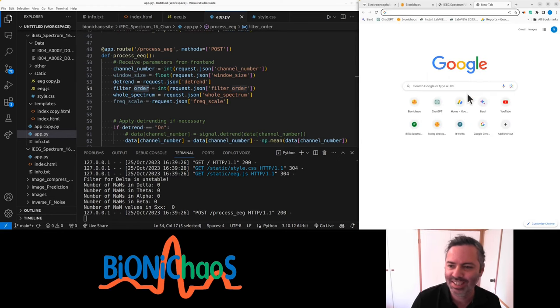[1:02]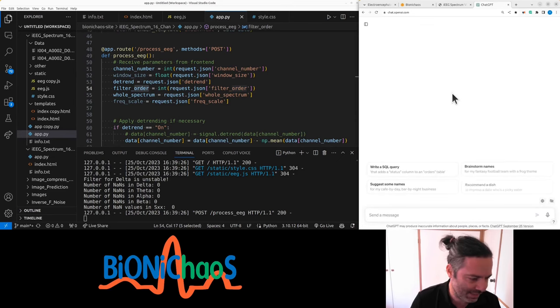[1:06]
Have any errors? We have the data displayed. Yeah, there's a triple click. The whole spectrum is actually not showing anything. Right, we need a developer, a software developer, a full stack,
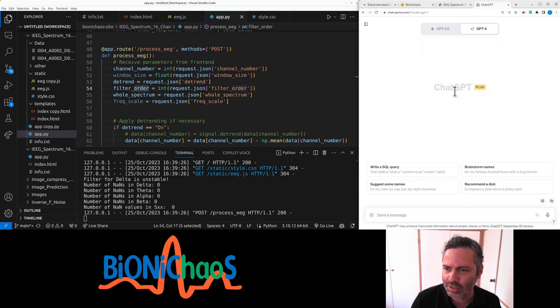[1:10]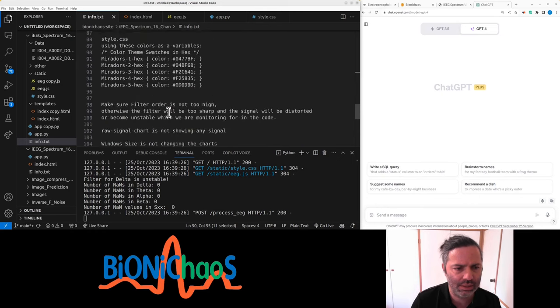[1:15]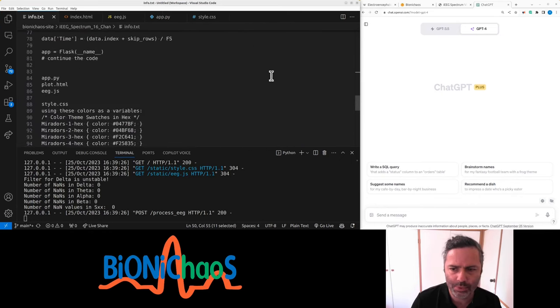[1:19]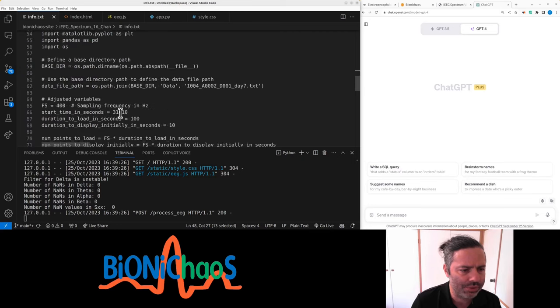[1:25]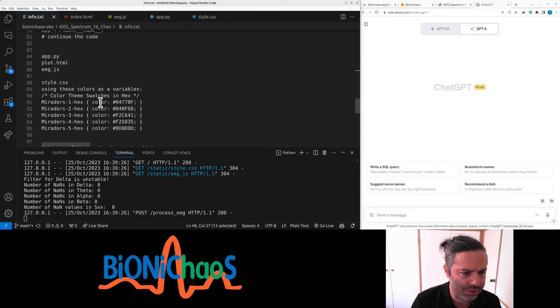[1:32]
ChatGPT-4, I think default, and we normally start. So we have those prompts. We already used them before. Start with this. Right, so we started, we had the beginning of a code that another bot actually created. So we have the continuation of that.
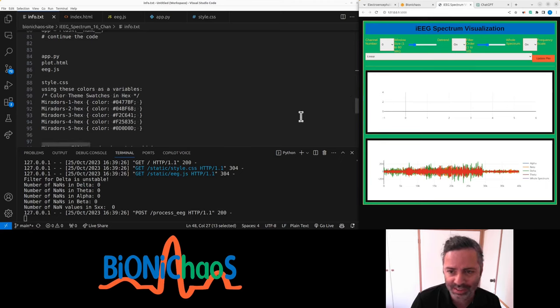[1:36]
You can obviously tell that we are using a color scheme, but that's a bit, yeah, messy. I have to clean it up. Can do it later. Yeah, that filter order, we actually changed the default. Raw signal just not showing any signal. The window size input is not updating the charts. Also, yeah, the whole spectrum is not working properly.
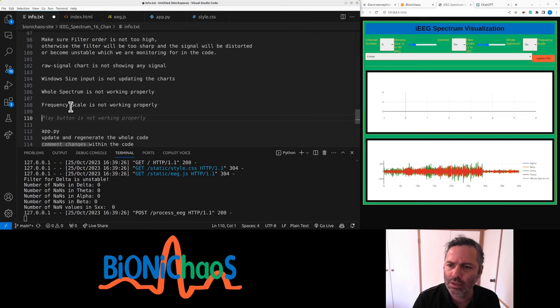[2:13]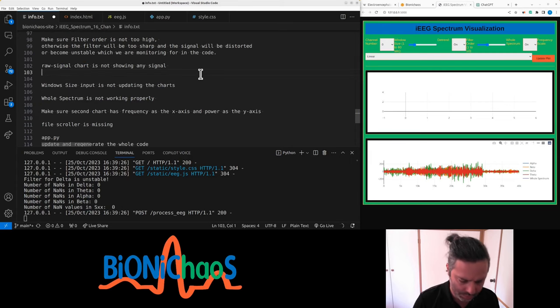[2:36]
I'm not sure about the frequency scale. Yeah, the frequency scale, as if we don't have the play button. We don't have the scroller as well. File scroller is missing. Make sure the second chart has frequency as x-axis and power as y-axis. The raw signal chart is not showing any signal. Also make sure the chart has time as x-axis and amplitude as y-axis. Okay, so we have those prompts. Play button is missing as well.
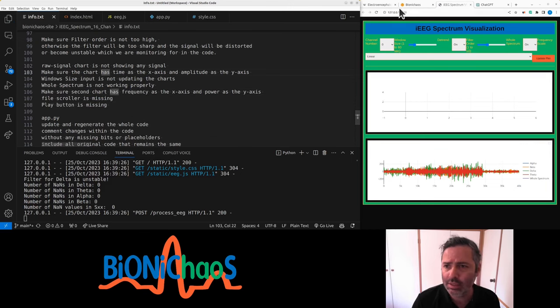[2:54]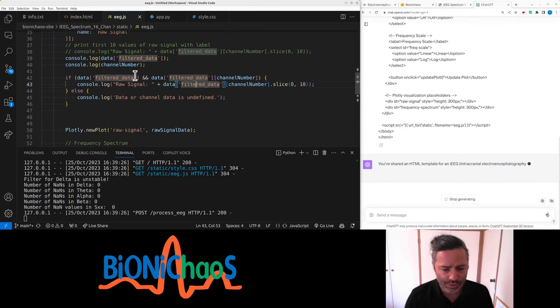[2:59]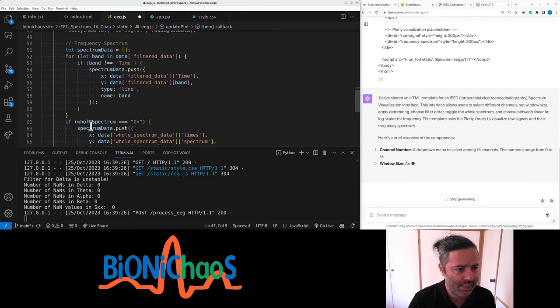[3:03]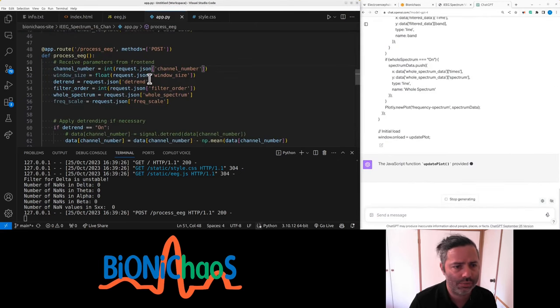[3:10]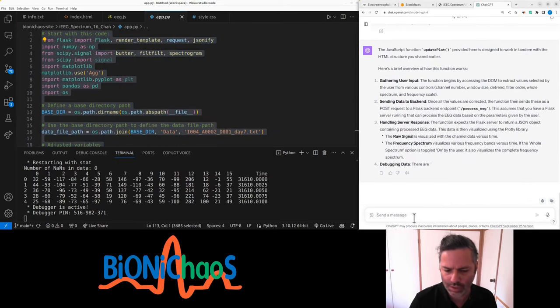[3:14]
Right, so let's start with index.html. Let's generate for a bit just to make sure it's actually read the JavaScript. Okay, stop generating the JavaScript and the actual Flask application Python code. Okay, we can stop generating that. This is the third file. The Python code still generating. Okay, we can stop that.
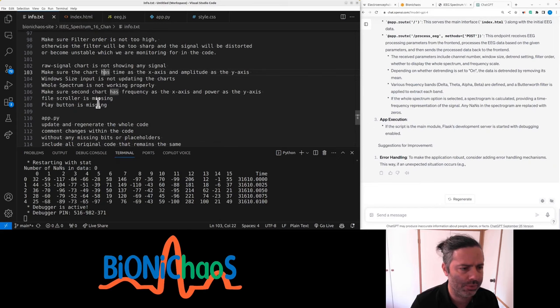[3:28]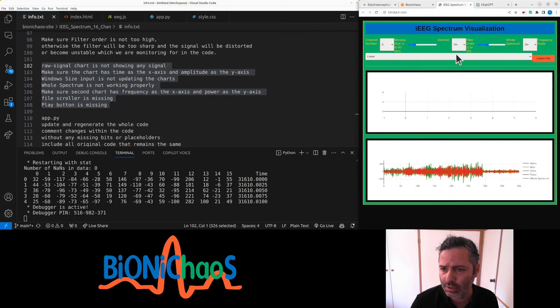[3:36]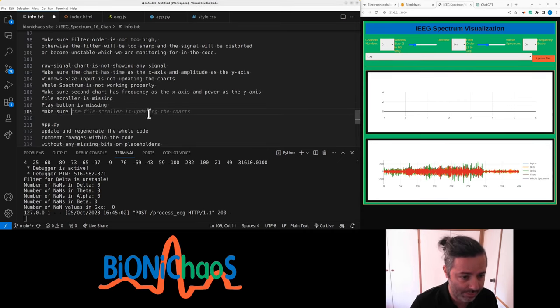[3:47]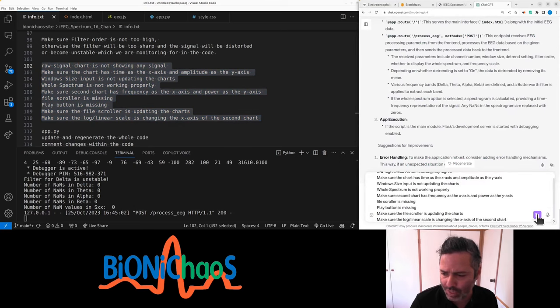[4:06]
And now we have our prompts with all the issues that we are having. I think this should be plenty by now. This is what it currently looks like. There's a lot of problems with that. Also make sure the linear logarithmic scale should be applied. Yeah, the file scroll is updating the charts. That's a good idea. Make sure the log and linear scale is changing, meant to be the x-axis of the second chart. That's right. So we have a bunch of prompts ready to pop in.
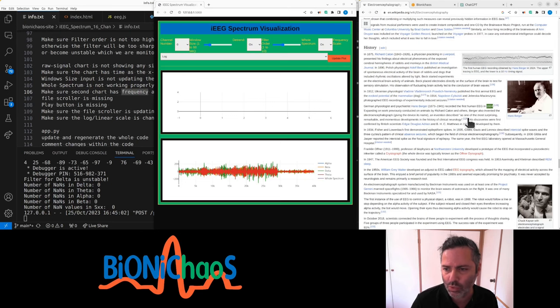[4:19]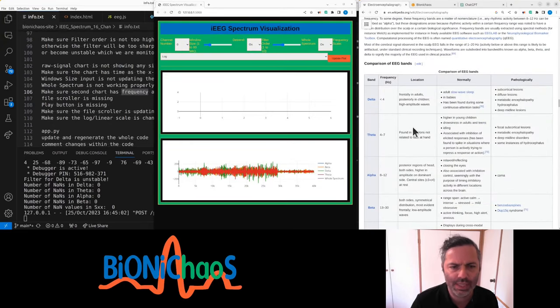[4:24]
And yes, we're celebrating 100 years. The first human EEG was recorded by Hans Berger back in 1924, so we're celebrating that next year. By the way, the bands, we're currently doing only alpha, beta, theta, but there's also gamma, pretty much anything above 32 hertz, and also mu between 8 and 12. It's the same as alpha, filtered differently or something. I don't know. But yeah, alpha, beta, delta, theta should be a good start.
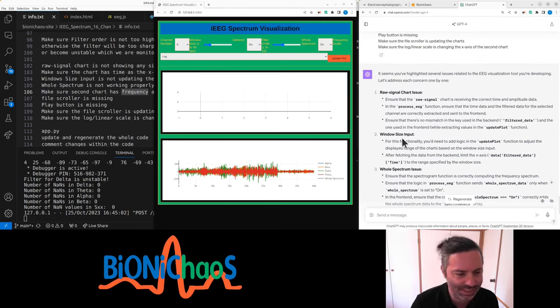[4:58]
Several issues. Yeah, it didn't generate any code. Yeah, I would like you to hold my hand and give me step-by-step guidance. So essentially, it's saying too much, too many prompts at once, incorrect time and amplitude data. So that's a good start.
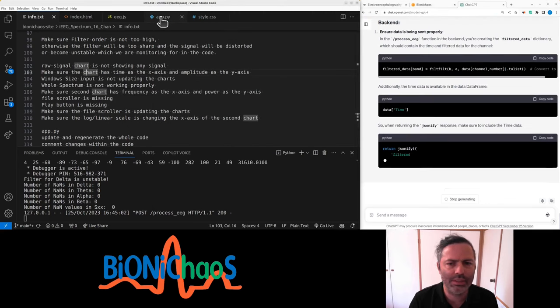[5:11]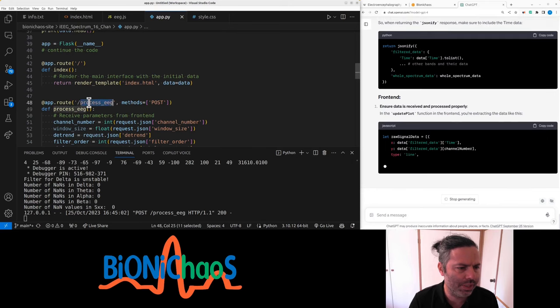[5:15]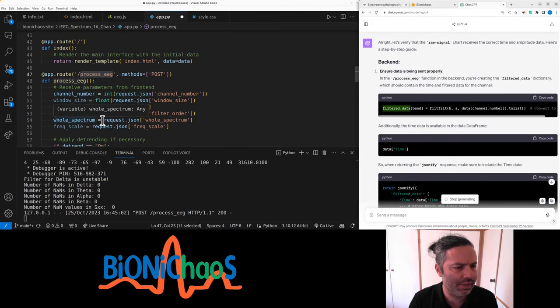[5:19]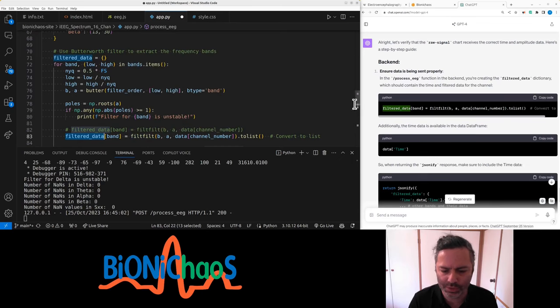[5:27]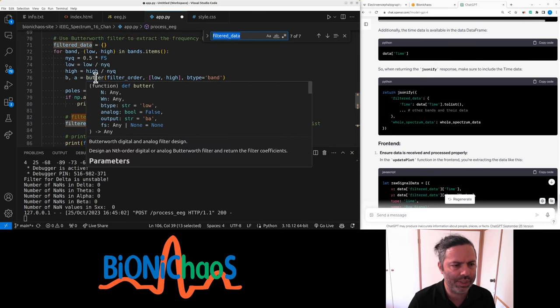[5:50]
Okay, and the process EEG function in Python. I have a process EEG function somewhere over here. A filter data right over here using the filtfilt function, converting to list, the forward backward basic filter. This is the same, is it? Yes. So why did you mention it? So when returning the jsonify, we have filter data, whole spectrum. So filter data has a channel number. Right, we're already doing a Butterworth filter. Maybe it's a bandpass. Right, those are the coefficients, and then the coefficients are being used in here. So that should be fine.
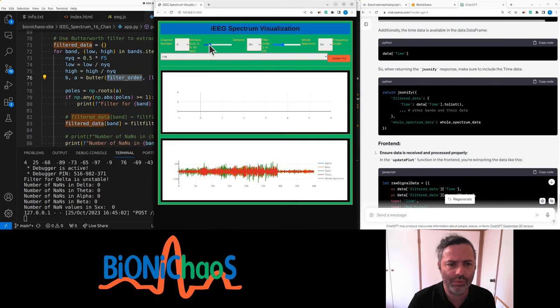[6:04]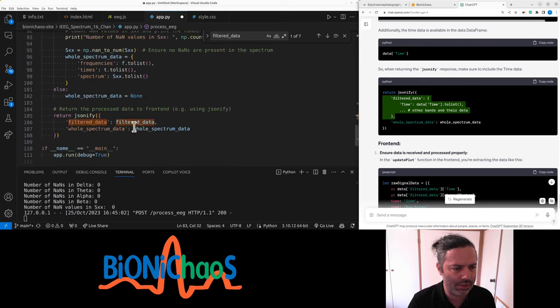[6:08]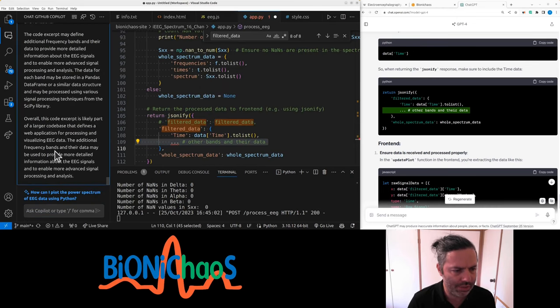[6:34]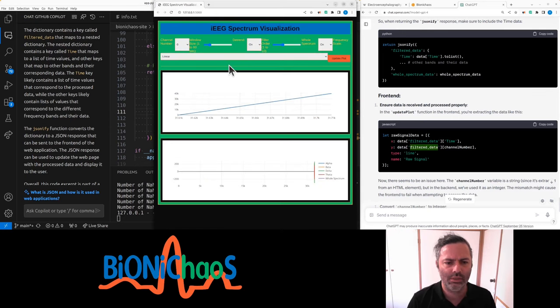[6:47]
Filter order is taken from there. It's suggesting that we are not passing the right values. So instead of that into JSON, I want to pass this. Doesn't make sense though. Can you explain this? Can we use Copilot for that? It's generic. Can Copilot do this? Filtered data and other bands front end. This is in JavaScript. I think this makes more sense.
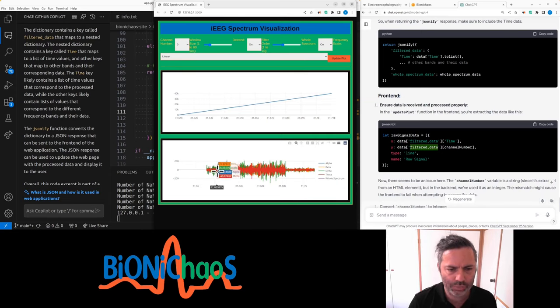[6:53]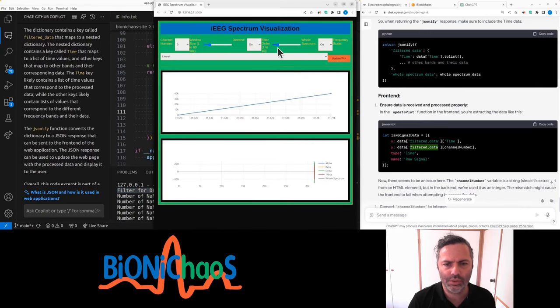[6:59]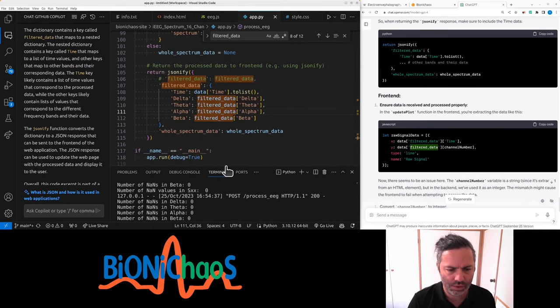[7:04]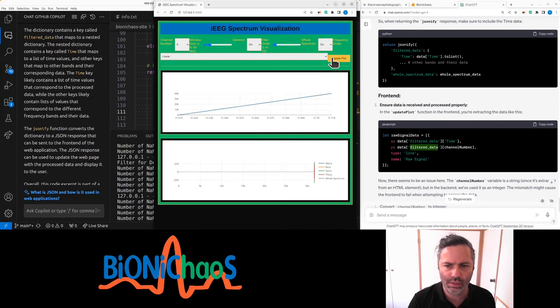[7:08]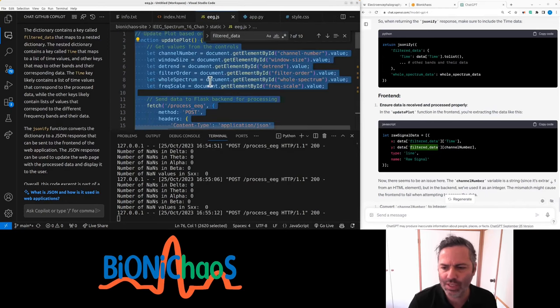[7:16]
Okay, so now it's displaying something. This is obviously wrong. It should be starting... filter of delta is unstable. That's normally when we need to decrease the order of the filter. So now it doesn't say unstable anymore, but it's also not showing anything useful. Okay, so we haven't finished modifying the code.
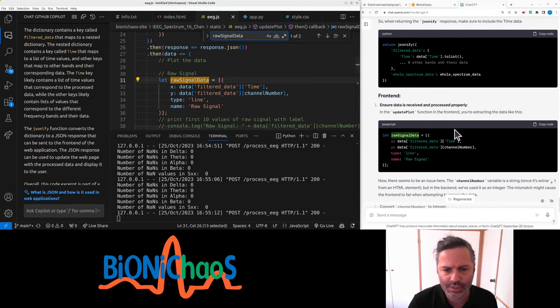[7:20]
So we have this time that's correct. So we need to parse channel number to integer. Pretty sure it's already an integer, so we're already doing that. It says to replace channel number, get element by ID, but channel number would be an integer already. Don't know what it's talking about. Verify that we're receiving correct data. Yeah, console log is not a bad idea.
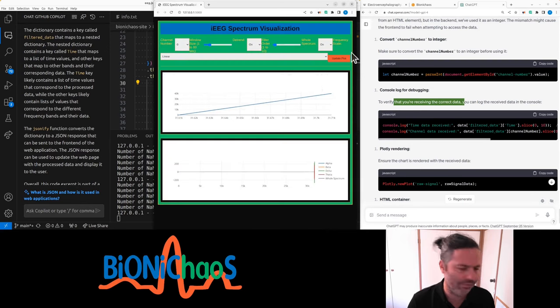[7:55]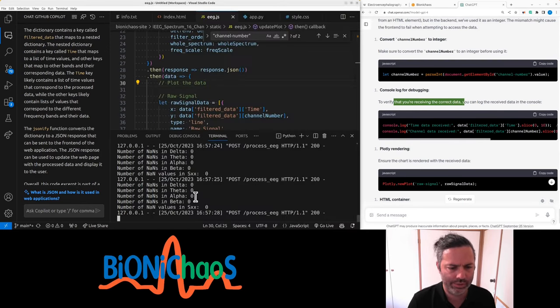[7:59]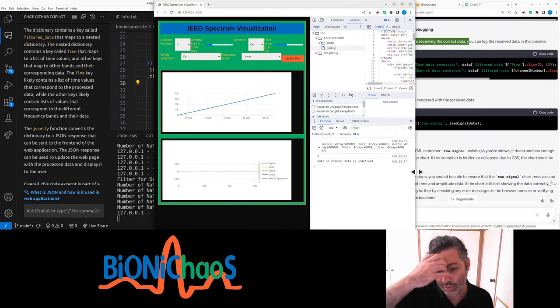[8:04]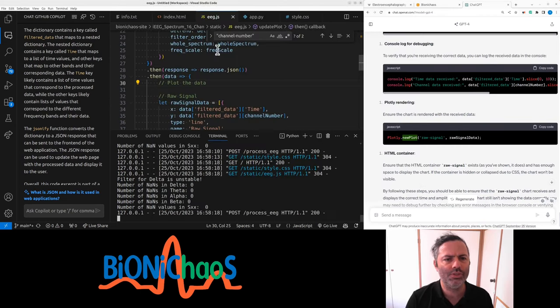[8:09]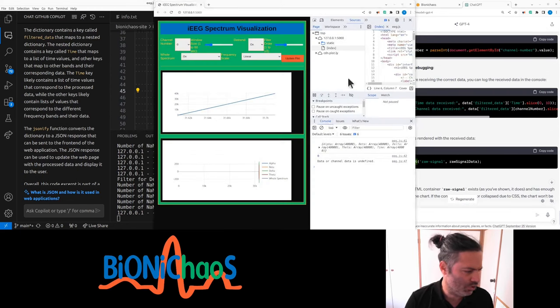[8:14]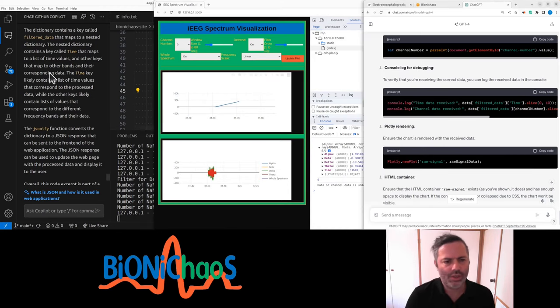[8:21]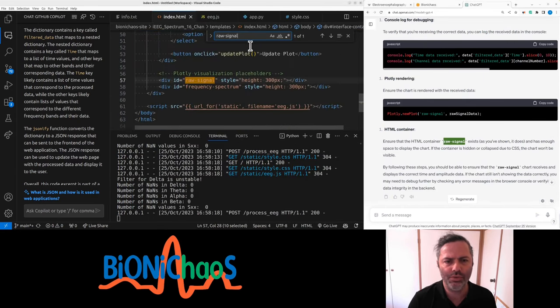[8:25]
Let's just see if filter of delta is unstable. What? So there are no NaNs before. We had a problem with NaNs. Getting a channel that is undefined. Pretty sure we have this already. Already showing some data. What is this problem? Yeah, this is quite common. A HTML container called raw signal.
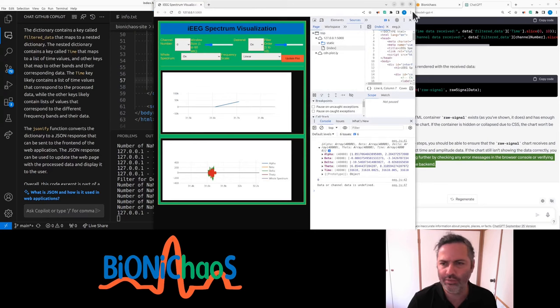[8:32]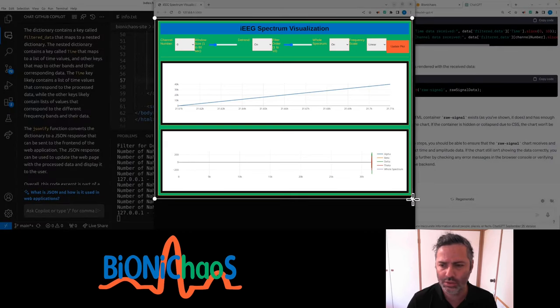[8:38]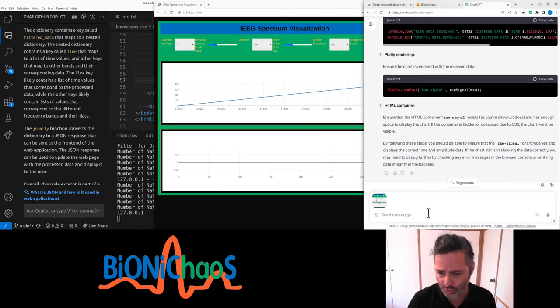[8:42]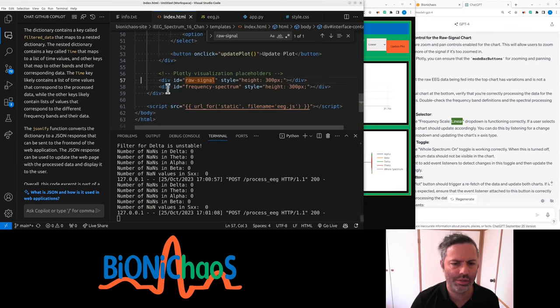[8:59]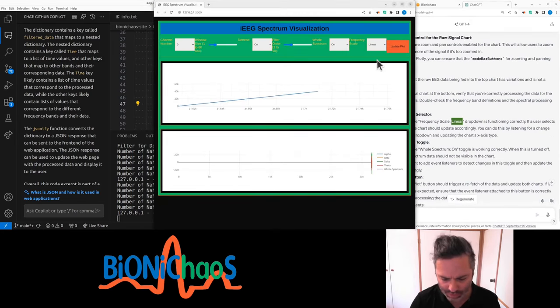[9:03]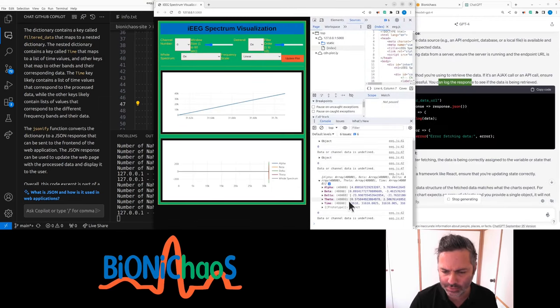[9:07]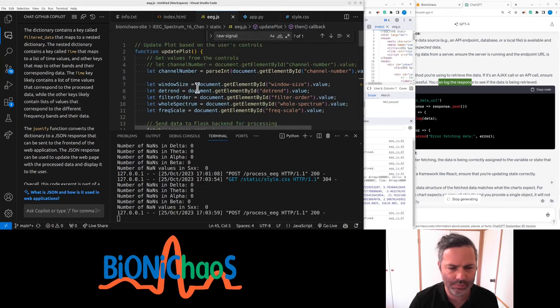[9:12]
It does exist. Now let's try something unusual. Let's try print screen straight into GPT-4. This is the front end. How to fix? Yeah, that's what I thought. That's probably not the case. Now there's nothing when zooming in. Where's the top? It's still giving me that undefined. It's giving me some data. Okay, let's try...
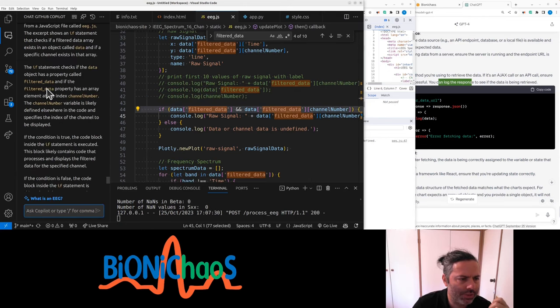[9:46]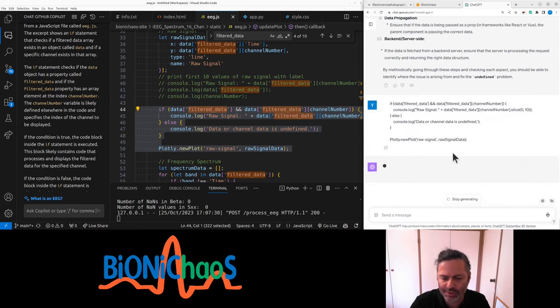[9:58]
Copilot. Let's go back to the window. This raw signal, JS raw signal, plot raw signal data. This one is appearing twice. It's getting the same thing. Let's see what's up. Am I plotting that or not? Those essentially are empty, aren't they? The object has a property filtered data, and if the filtered data property has an array element at the index. So this should be true, unless... a better explanation of this. Yeah, there's a confusion with the names when calling without any conditions. Yes, this plotly can be replaced.
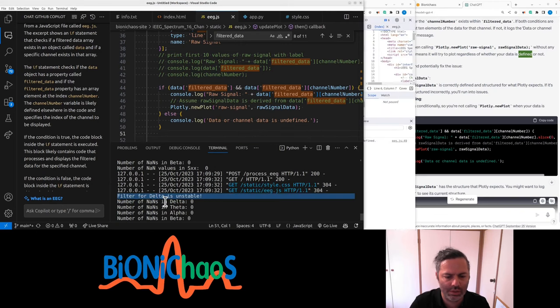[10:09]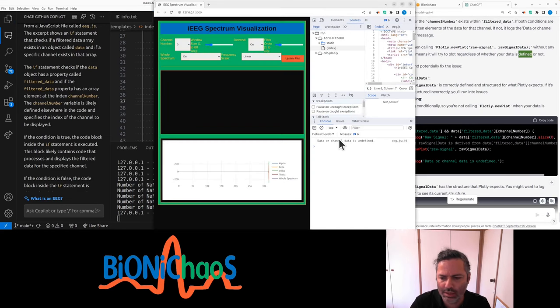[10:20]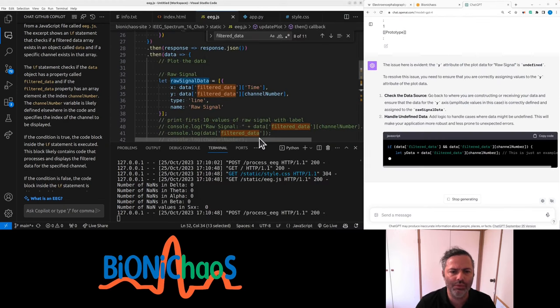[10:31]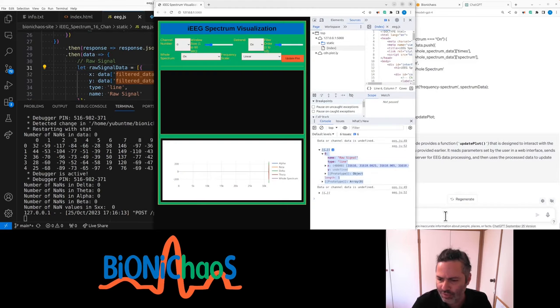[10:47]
First, in the HTML, we need this value smaller. Let's make it 2. Second, let's plot raw signal. Y is undefined. Check the data source. Raw signal. Why is it just an example? What is the data structure? So this filtered data has different bands. You should have the whole thing as well. So whole spectrum data. Can you fix this for us?
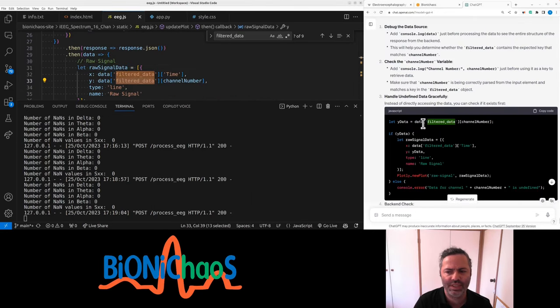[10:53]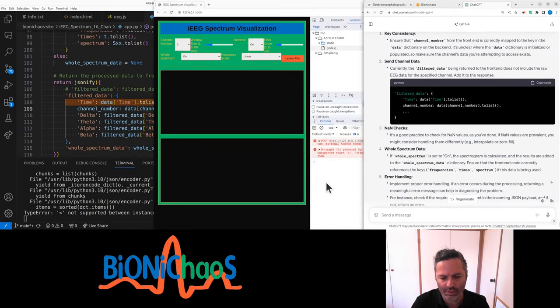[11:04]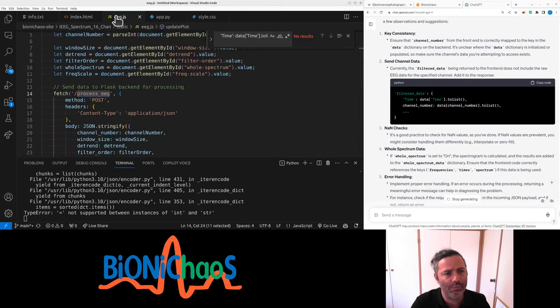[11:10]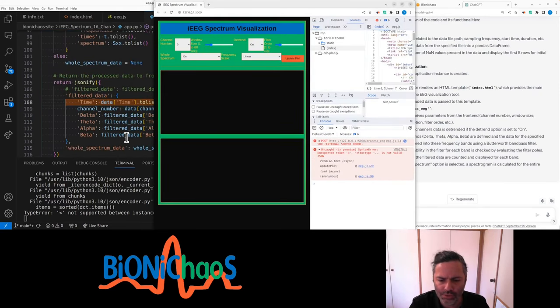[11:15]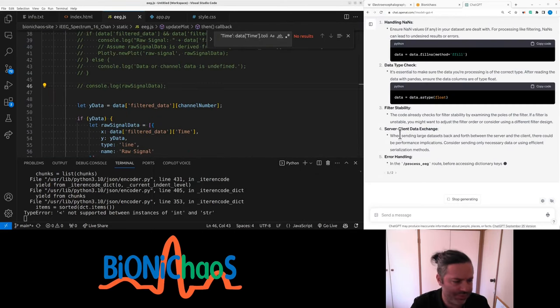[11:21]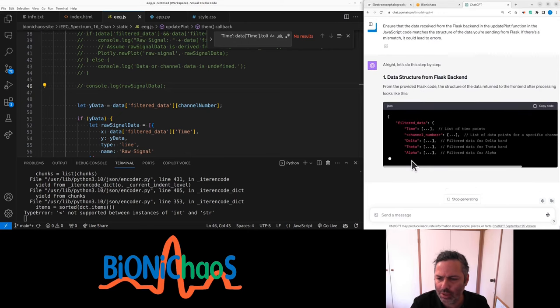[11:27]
I don't know how to do it. So in JavaScript, it's already there. Yeah, filtered data would not have a channel number. Okay, let's try this again. Channel number should be passed on in another way. To understand why it is not able to fix the problem, let it run. First of all, we have an issue in JavaScript, line 29. Yeah, we're having a problem with this server client data exchange. Yeah, why is the channel number in the filtered data?
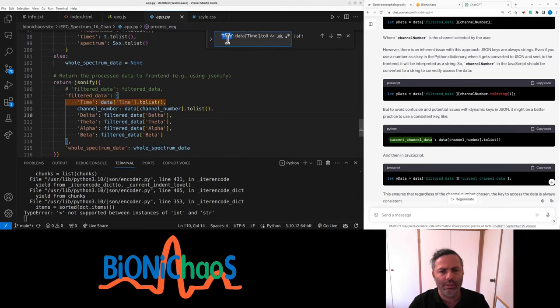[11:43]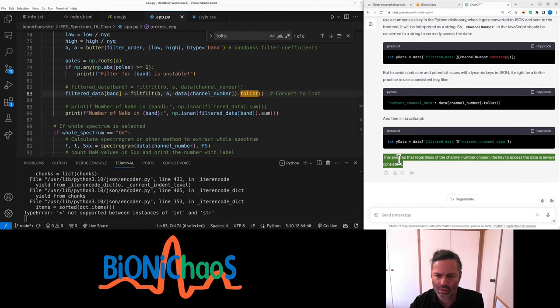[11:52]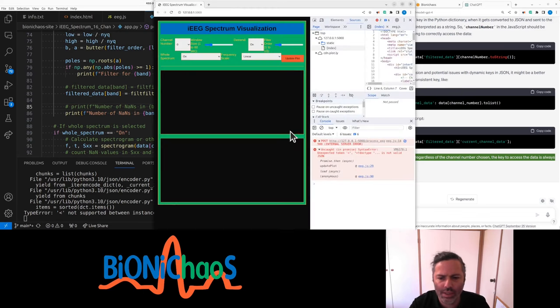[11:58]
It shouldn't be there. Yeah, no, that's what I have, but that's the other problem with JSON, it's always strings. In Python, channel, current channel data, pretty sure we're already converting it to a list. Doesn't make any sense at all. Okay, currently what we have is not exactly working.
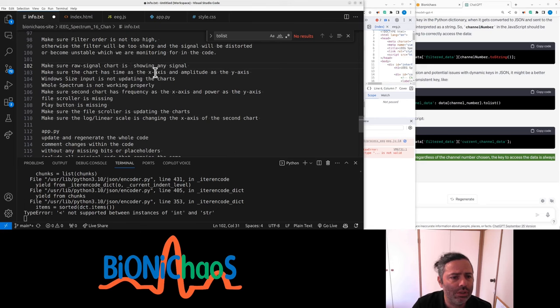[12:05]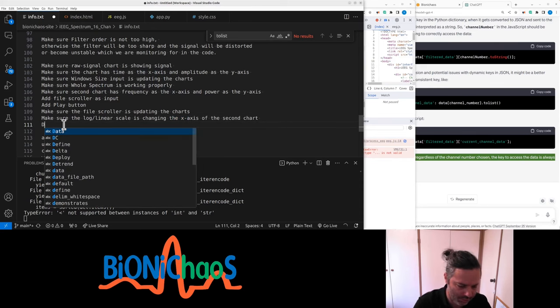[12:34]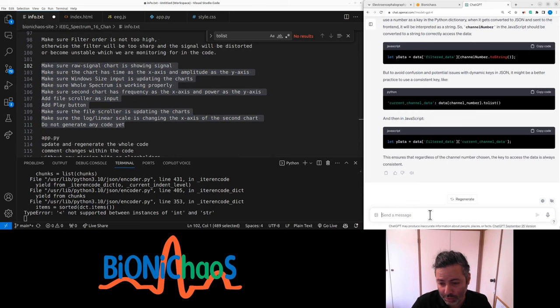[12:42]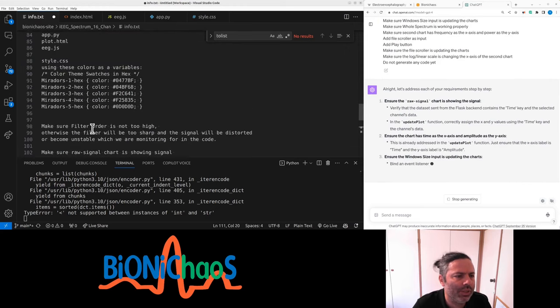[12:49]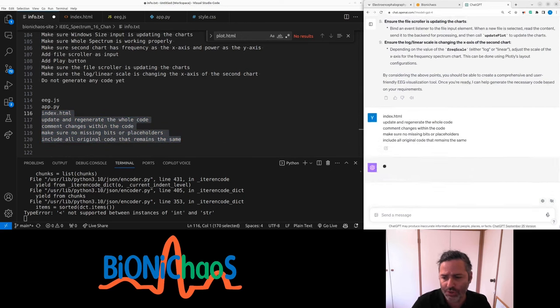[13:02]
I'll ask it to regenerate the files one by one. Make sure no missing bits. or placeholders to include all the original code that remains the same. Okay, let's do index HTML first.
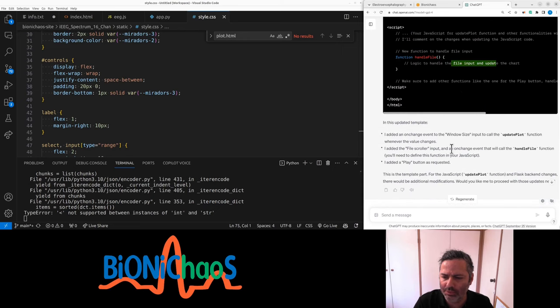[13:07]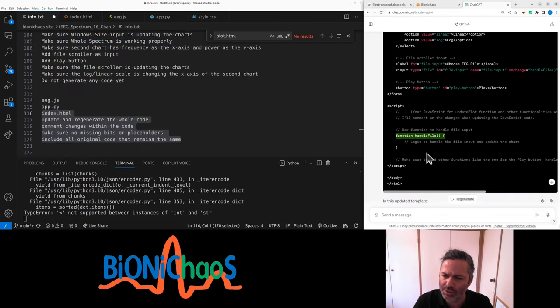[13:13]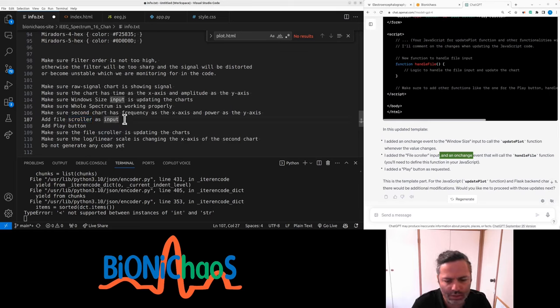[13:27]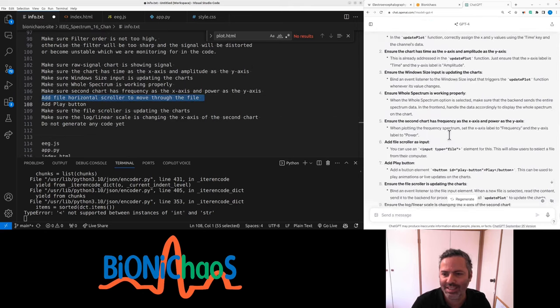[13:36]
What's up with that? Backend changes, there would be additional modification. New function to handle file. It's not file input, silly goose. It's file scroller. No, there's only one file. File scroller. It's a horizontal file scroller to move through the file.
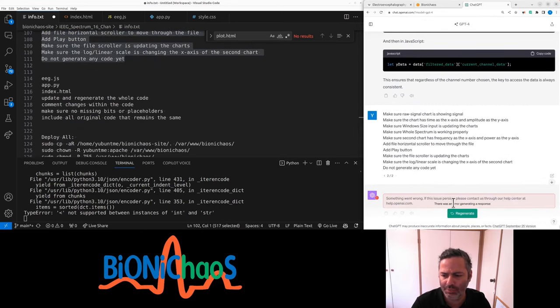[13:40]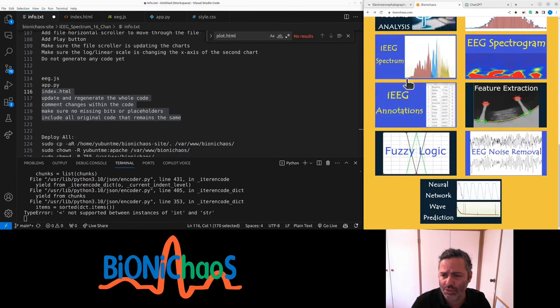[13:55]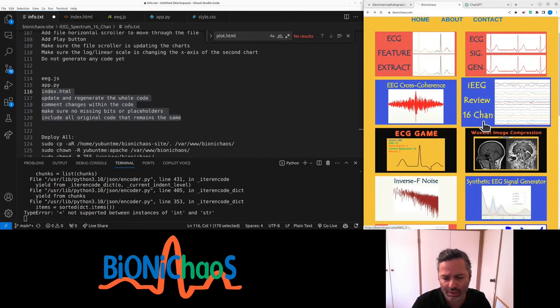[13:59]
Again, from here. Something went wrong. Here's the plan. Raw signal chart, spread signal. Why does the data variable contain the correct channel? Yeah, that would be nice. Window size, second chart. So it essentially should be similar to this, but with quite a few changes.
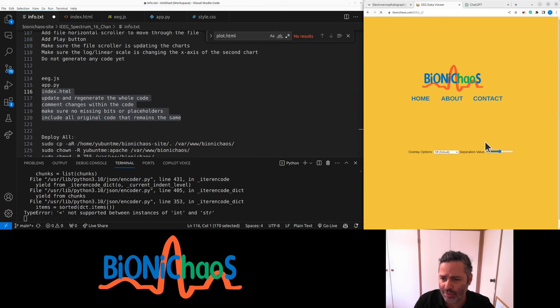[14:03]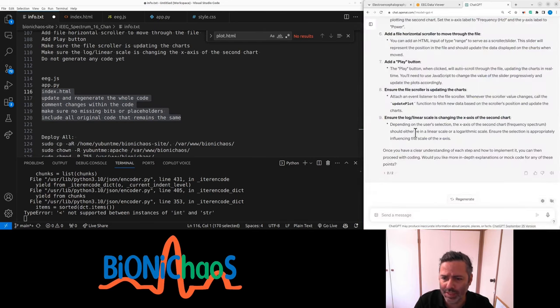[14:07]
But it should have a file scroller like that. Yeah, a play button, and scrolling updating the charts. Horizontal scroll moves through the file. Yep, scroller slider. Sounds good. Yeah, we'll need to update the CSS.
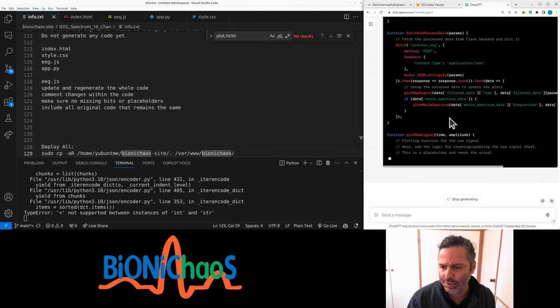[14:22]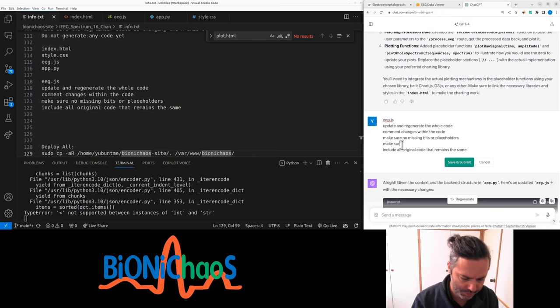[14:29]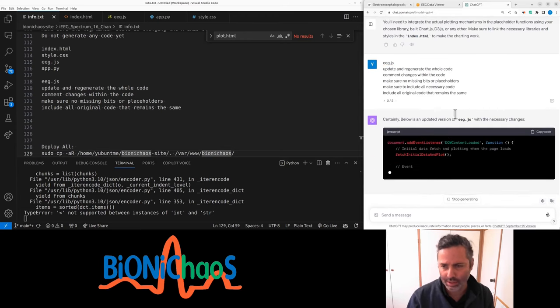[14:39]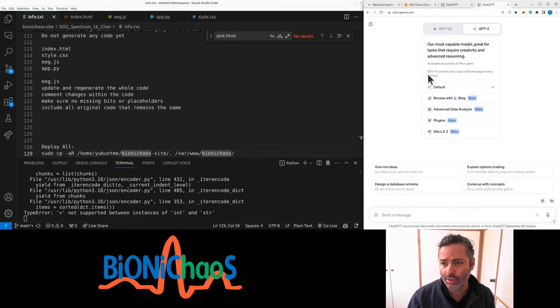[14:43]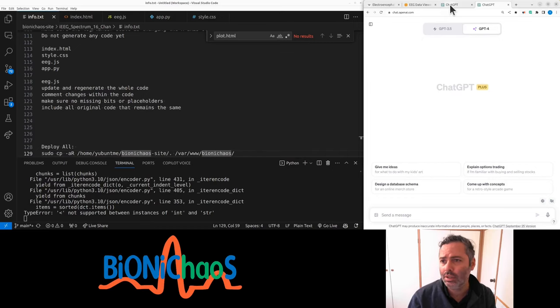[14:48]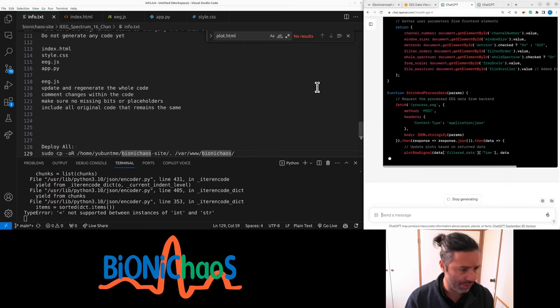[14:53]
Come on, why are you ignoring my instructions? Still generating. Make sure to include all necessary code. I'll hit the limit, wouldn't I? It's a cap of 50 messages every 3 hours. It's meant to be a moving window, so yeah, now it seems to generate a whole code without any missing parts. Okay, it's still generating.
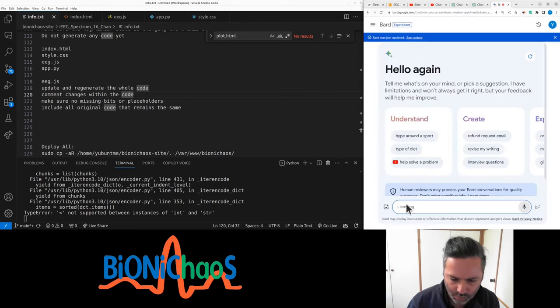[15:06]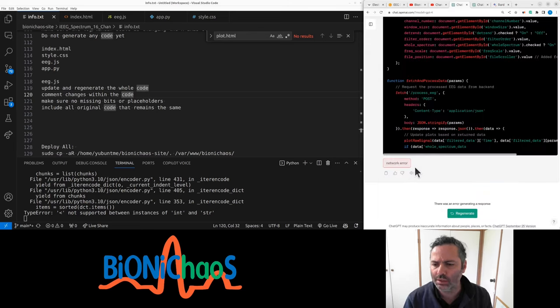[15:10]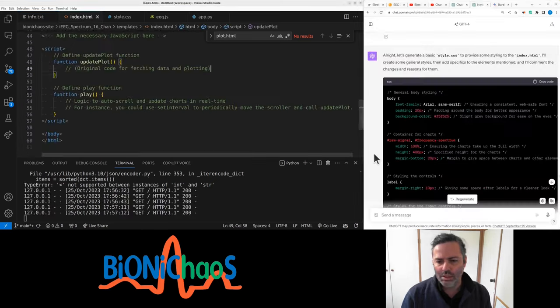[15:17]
I don't know why it stopped. Give it some more time, or is it just stuck here for whatever reason? What's going on? Let's ask Bard why GPT-4 is getting stuck a lot recently. Network error, that's why. Should I regenerate, restart the window? The CSS should have been using the colors. I'll change it in a sec.
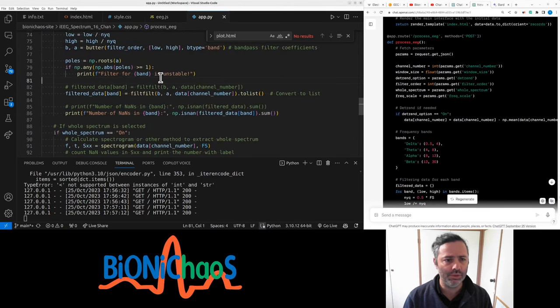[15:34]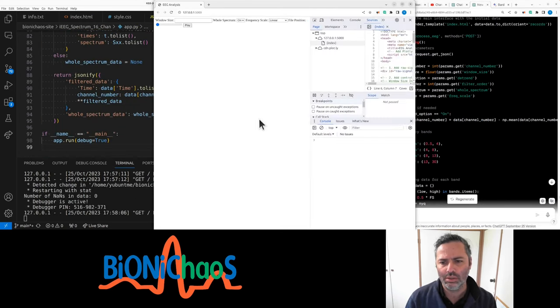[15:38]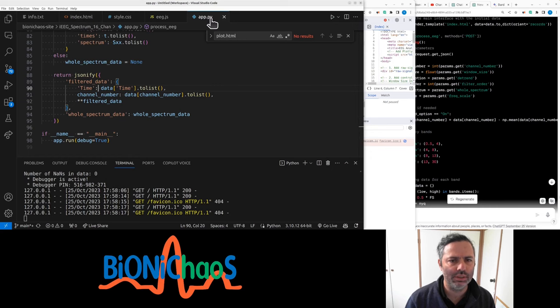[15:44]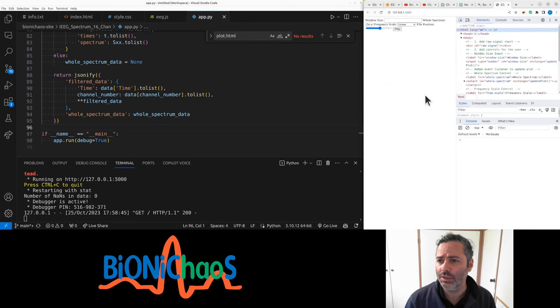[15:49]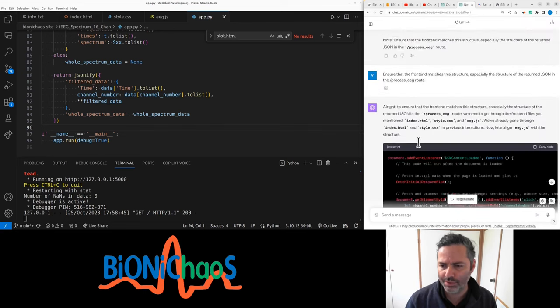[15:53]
Now this JavaScript. Last application, the Python code. It's loading something. Takes a while. Not getting any errors, but not getting any data. Let's stop this for a sec. Hey, Ctrl-Shift-C, the one we got an error with.
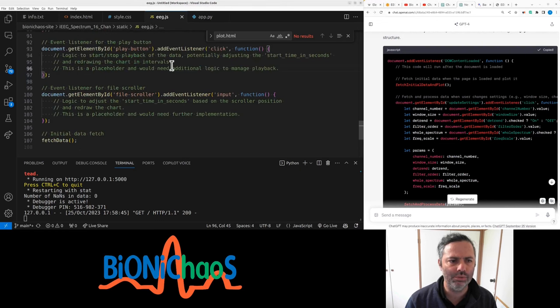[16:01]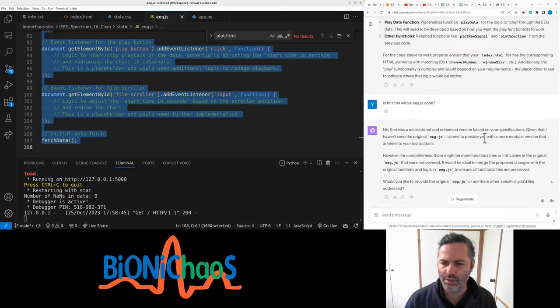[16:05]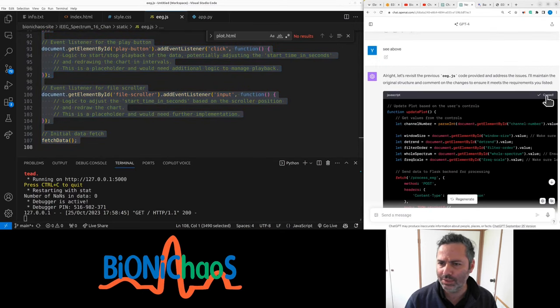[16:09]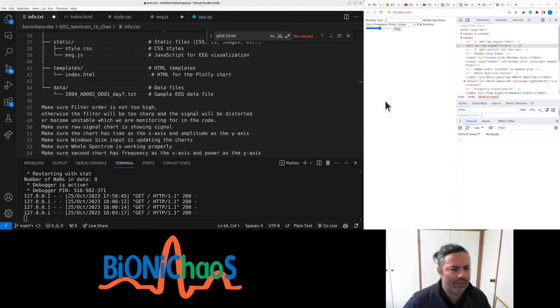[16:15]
So this is the Python code. Now we had an update to the JavaScript that wasn't complete, and now one that is not complete. Set no placeholders. Yeah, I guess redoing it several times kind of helps. Let's start again, shall we? What we currently have isn't working.
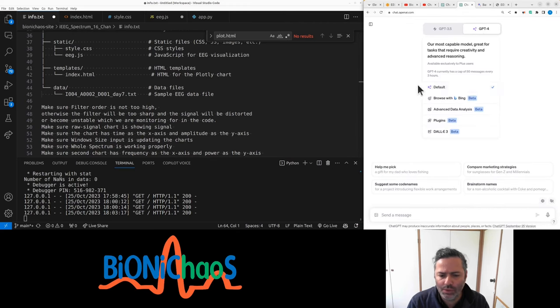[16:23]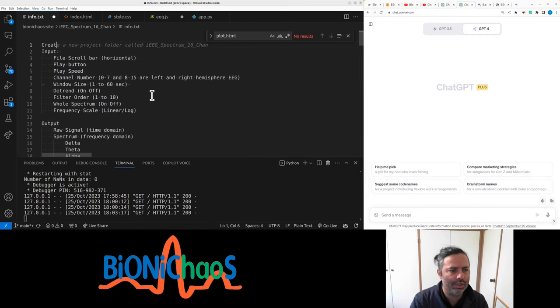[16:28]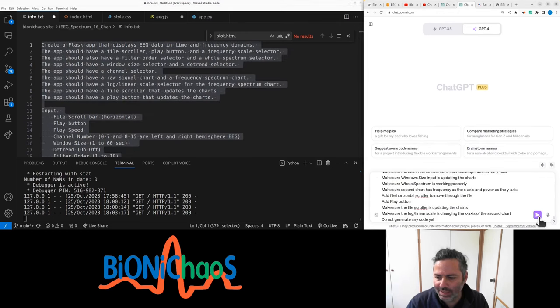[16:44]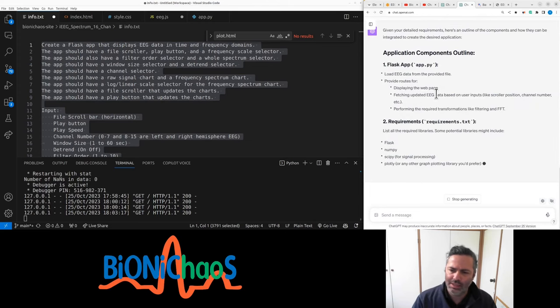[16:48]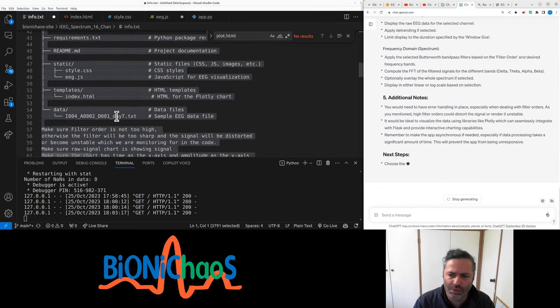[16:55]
So default GPT-4, we have this: first, create a Flask app that shows EEG in the time and frequency domains. The app should have a file scroller, play button, frequency scale selector, and should also have a filter order. Let's see. That's a crazy long prompt. Sending an outline. And yeah, forget about the requirements file, and instead, do not generate any code.
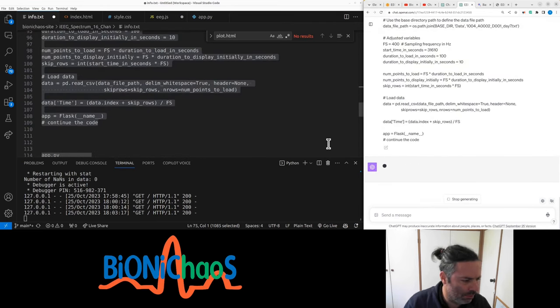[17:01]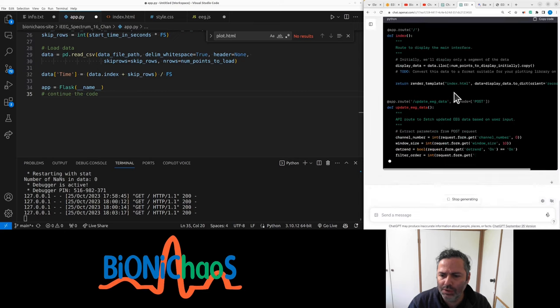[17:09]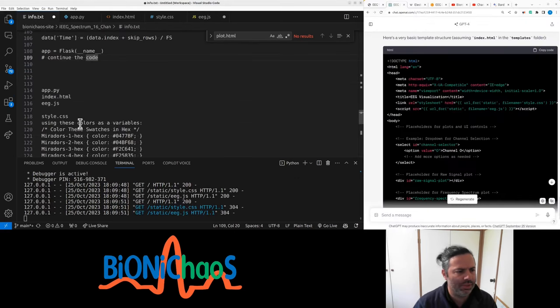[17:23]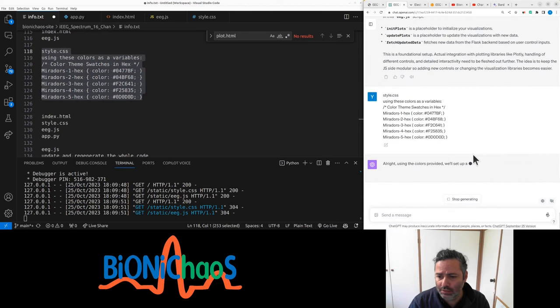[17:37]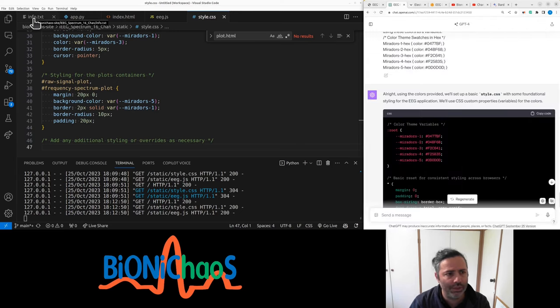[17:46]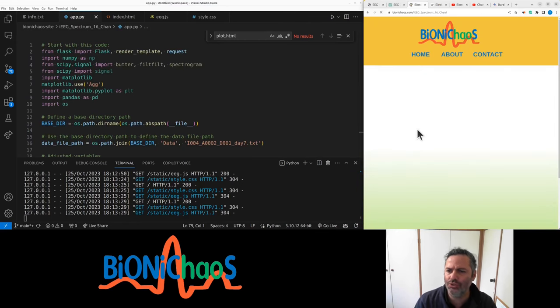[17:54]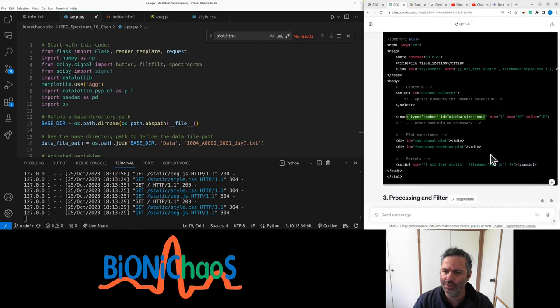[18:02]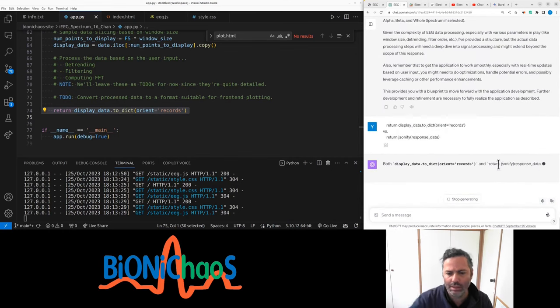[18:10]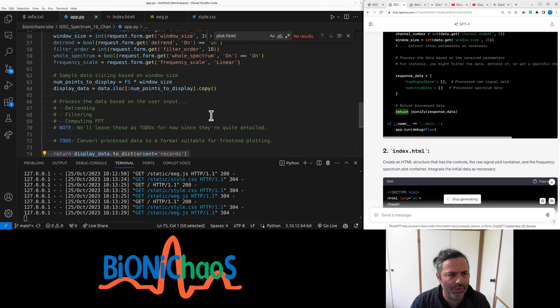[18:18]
Let's see what we got. What's that? Okay, it's not much. It went through the whole prompt, but it ignored a whole heap of stuff. The HTML would look something like this. It's pretty basic, as you would expect. Window size is okay. So now it's using JSON. No, I keep changing its mind, as if it has a mind. Assume it does, because that's what it was suggesting me doing.
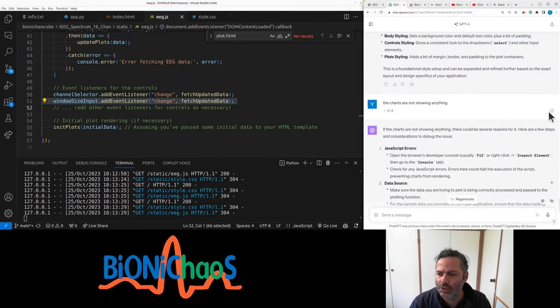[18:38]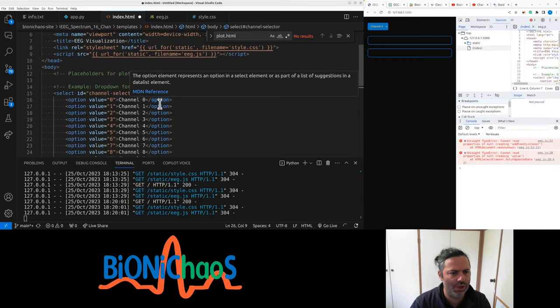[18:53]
The charts are not showing anything. Just keep it nice and simple. I had a better version of it already, but then it got too complicated. Generic stuff. So we do have this error. Do we have a channel selector? Use Copilot for populating that. 16 channels. Can we do it differently? Right. Yes, start button. No, there's no stop button.
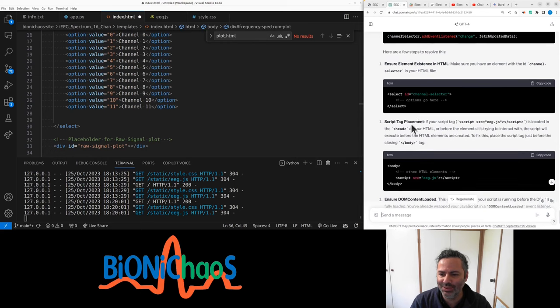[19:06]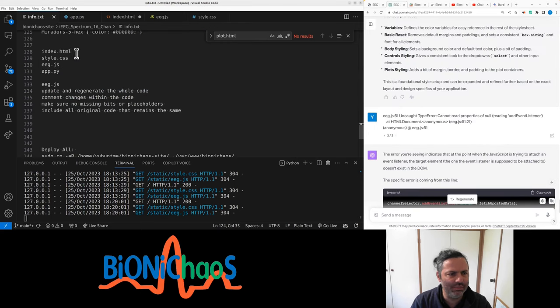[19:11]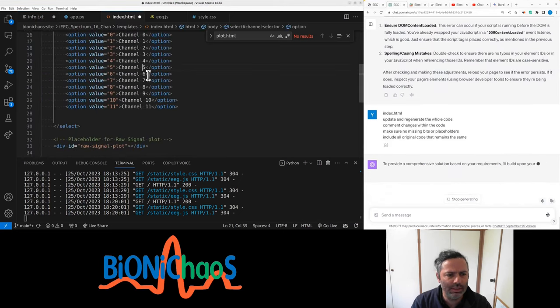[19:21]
Okay, let's go back to GPT. Okay, instead of that, index.html, update, regenerate the whole code, see what it does. What? Did I ask for index.html? Now it's generating HTML, okay.
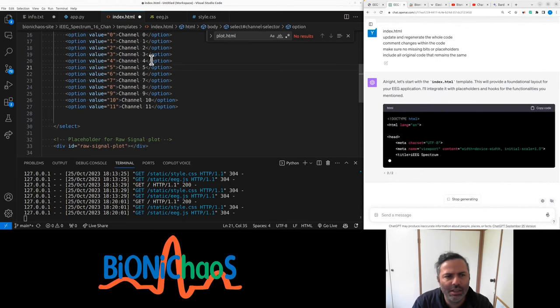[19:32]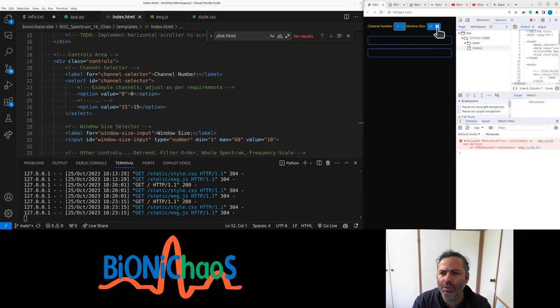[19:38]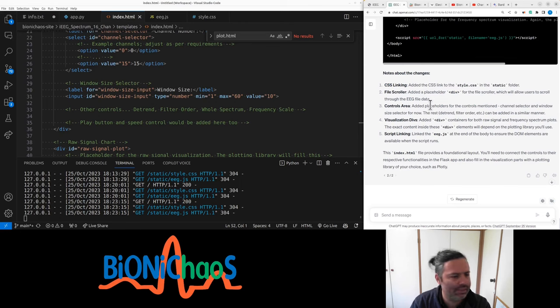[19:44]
So this would be the same, obviously. Right, channel number, window size. Ideally, those would be scrollers, but that's okay. So why is it refusing just to do the whole lot? Why not just complete the code? Still generating.
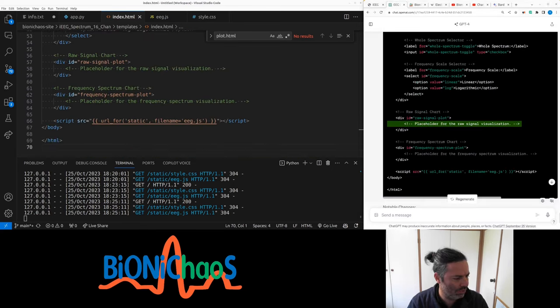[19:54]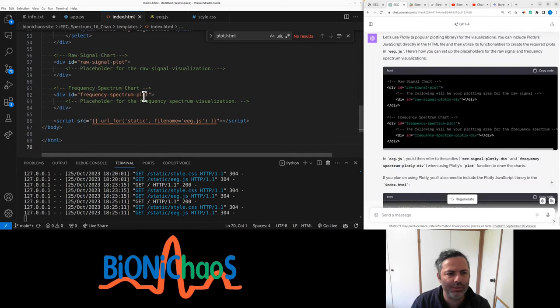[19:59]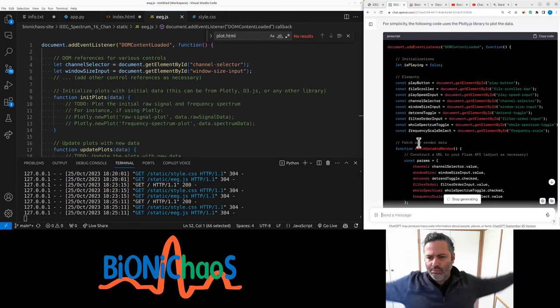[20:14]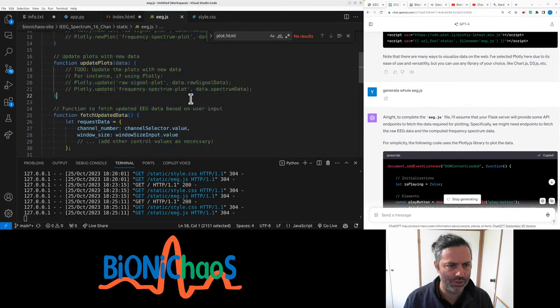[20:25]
I do want the signal, obviously. I already have an ID there. Yeah, plot is fine. Generate all EEG.js. Something has changed. It's not generating whole files. Fetch data. Yeah, time, amplitude, frequency, power. That's correct. That's exactly what I want. That looks much better. Still doesn't work.
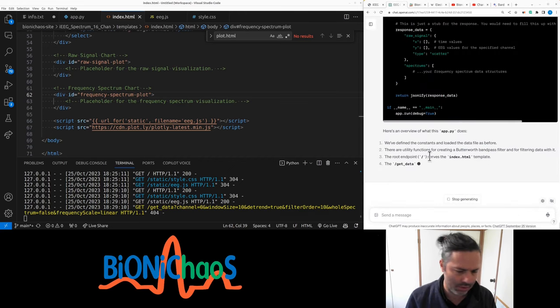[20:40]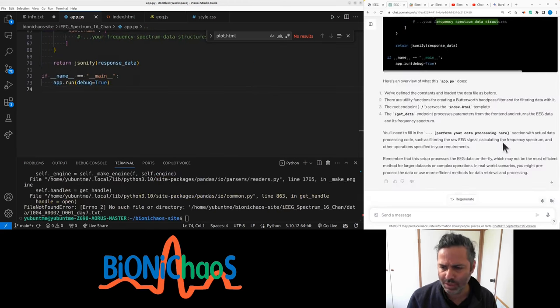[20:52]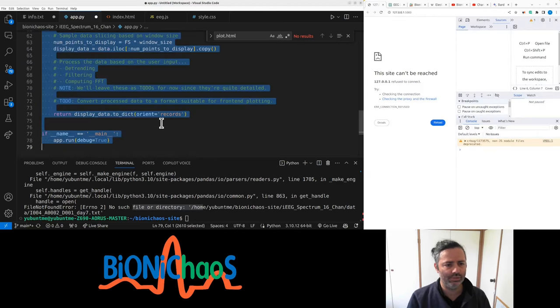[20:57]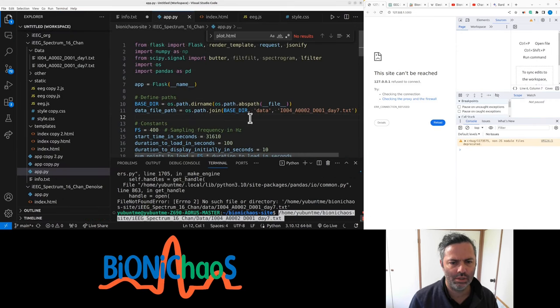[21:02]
So we don't have the JSON file. Hey, we want the whole file. Okay, I can only assume it's working better when it's nighttime in the United States or something, because it's actually generating complete code. Is it? It's shorter than what I had before. Jsonify, define constant, stuffed up the file. Now it looks legit. Okay, changed, meant to be capital. Can't read off capital letter.
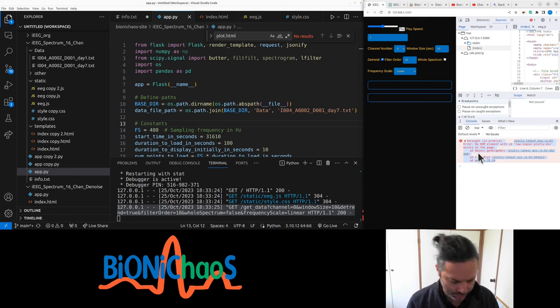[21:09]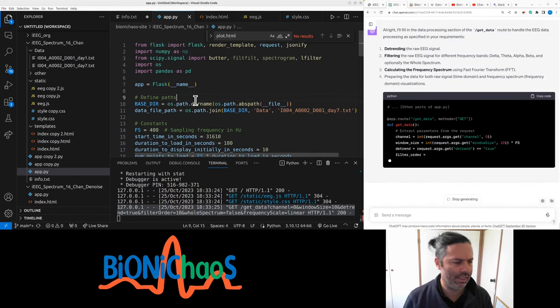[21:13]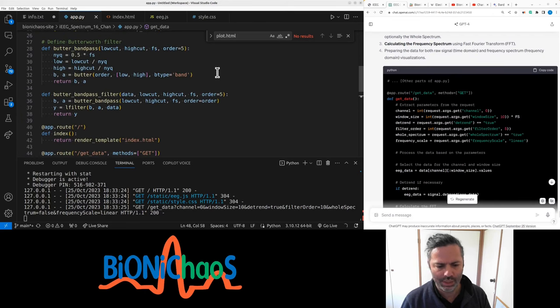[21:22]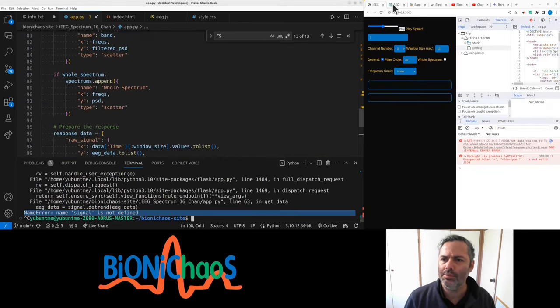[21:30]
And this looks pretty basic. Get data. It's all the same. Now we do want FS. It's actually FS in non-capital letters. Get data. Name signal is not defined.
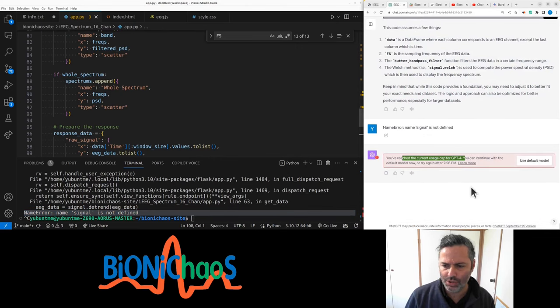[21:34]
Yep, we reached the current cap. Yeah, I thought I would reach it much sooner. I only reached it in about 2 hours, so I did more than 30 prompts. 50 prompts per 3 hour rate. Now it's giving me a timeout of almost 1 hour.
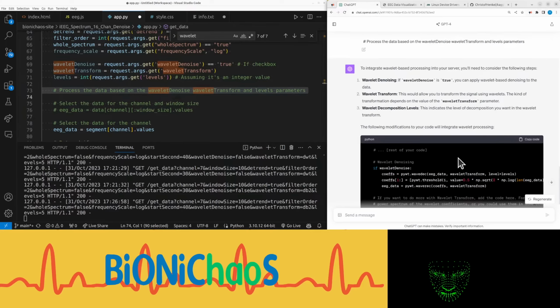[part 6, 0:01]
I'm just checking this out. Let's jump straight into it.
To integrate wavelet-based processing into your server, you need to consider the following steps. Wavelet denoising: if wavelet denoise is true, you can apply wavelet-based denoising to the data. Wavelet transform: this will allow you to transform the signal using wavelets. The kind of transformation depends on the value of the wavelet transform parameter. Wavelet decomposition levels: this indicates the level of decomposition you want in the wavelet transform.
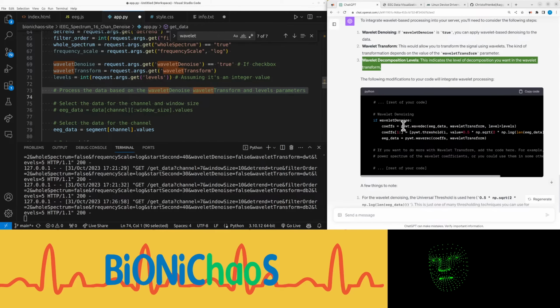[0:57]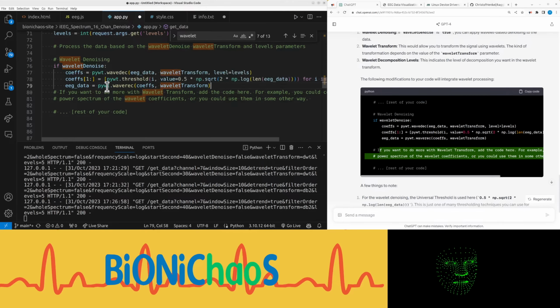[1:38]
The following modifications to your code will integrate wavelet processing. Right, let's start integrating this. Let's check for any suggestions. From GitHub. Oh, nothing.
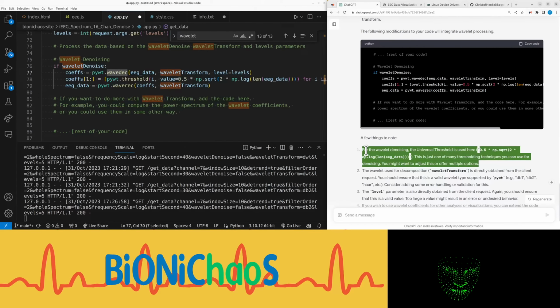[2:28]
For the wavelet denoising, the universal threshold is used here, 0.5 * np.sqrt(2 * np.log(len(eeg_data))). This is just one of many thresholding techniques you can use for denoising. You might want to adjust this or offer multiple options. That should be fine. The wavelet used for decomposition, wavelet transform, is directly obtained from the client request. You should ensure that this is a valid wavelet type supported by PyWT, e.g., db1, db2, etc. Consider adding some error handling or validation for this.
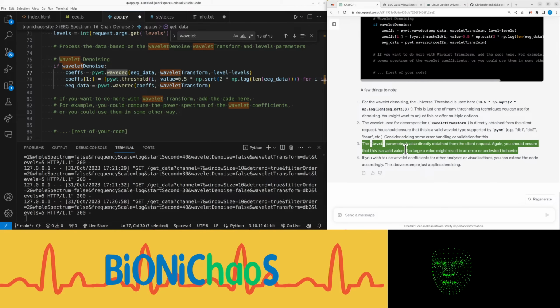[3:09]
This sounds legit. What else? While it's generating. The level parameter is also directly obtained from the client request. Again, you should ensure that this is a valid value. Too large a value might result in an error or undesired behavior. If you wish to use wavelet coefficients for other analyses or visualizations, you can extend the code accordingly. The above example just applies denoising. Right.
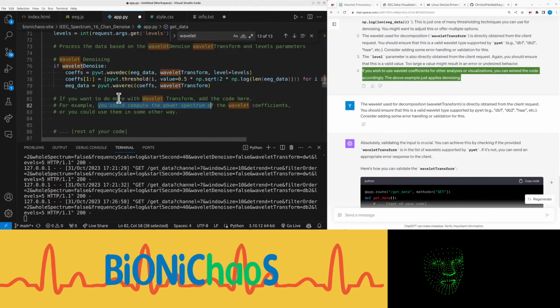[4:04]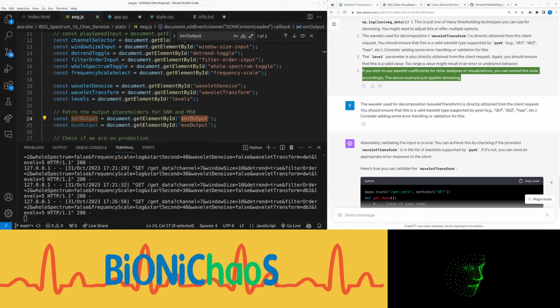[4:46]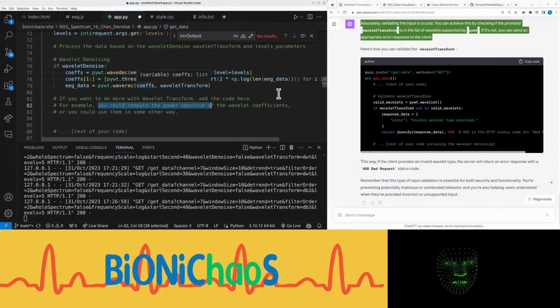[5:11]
Yeah, we also have the outputs. Just making sure it's the correct ID. Yes. Right, so want to do some error checking first. Absolutely, validating the input is crucial. You can achieve this by checking if the provided wavelet transform is in the list of wavelets supported by PyWT. If it's not, you can send an appropriate error response to the client.
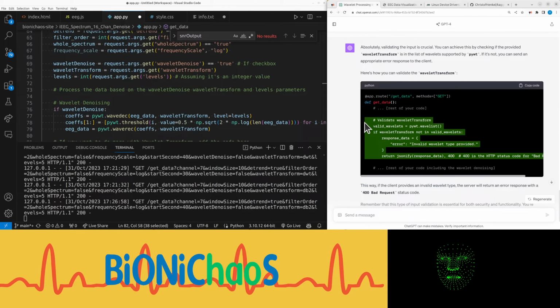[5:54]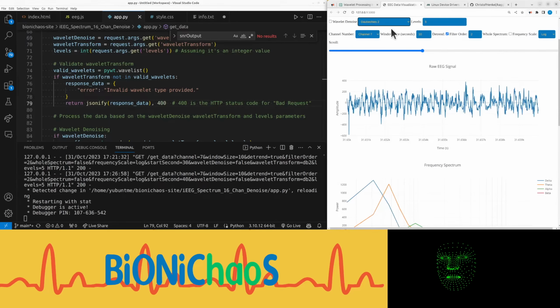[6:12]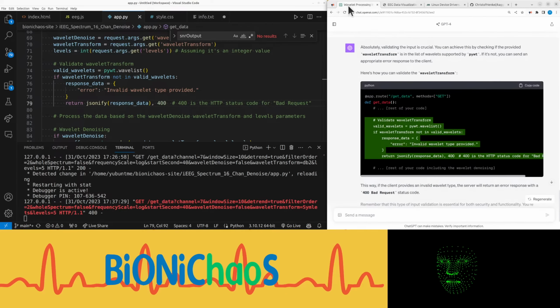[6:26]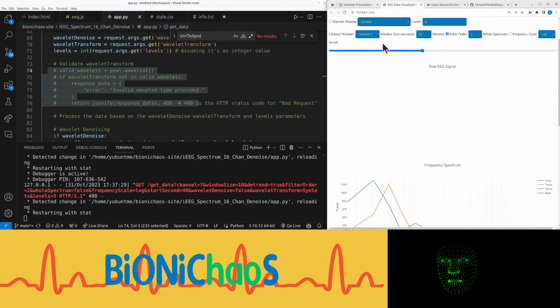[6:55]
Right. Let's pop this before here somewhere. Okay, we do get an error. This is not the type of error I was expecting. Do we get it even if I remove this? And no. Okay, can we print out this list?
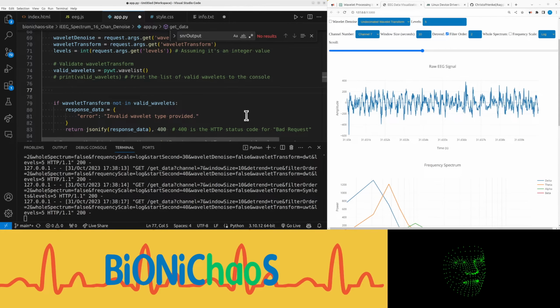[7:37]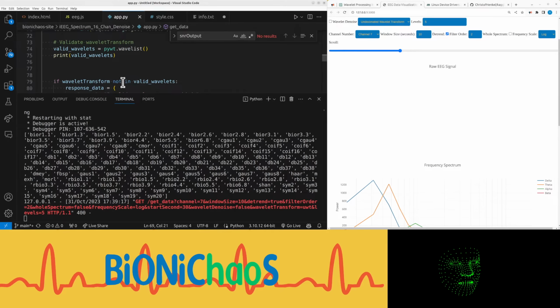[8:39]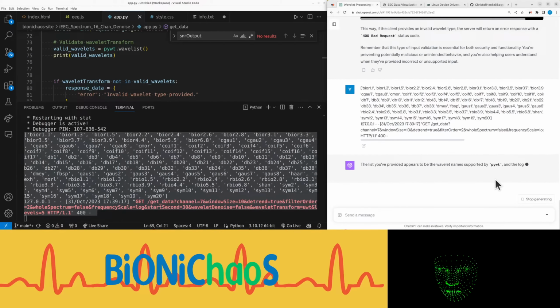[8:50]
Why Copilot doesn't want to work? Is it doing something? Ah, right. So you can just do that, can you? Right, this is the list. Okay, we need to adjust this drop down. Do they actually have names? And let's pop it back into GPT.
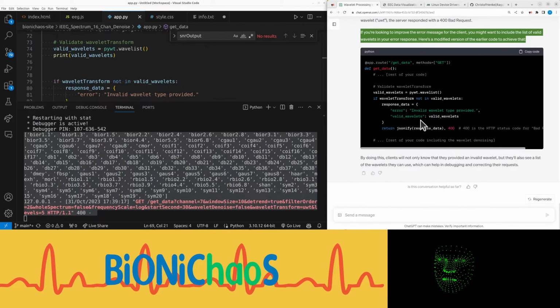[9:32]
The list you've provided appears to be the wavelet names supported by PyWT, and the log entry suggests that a request was made with an unsupported wavelet transform value, UWT. Yeah, are any of them legit? No. Given this, it seems that the validation code is working correctly. When provided with an unsupported wavelet, UWT, the server responded with a 400 bad request. If you're looking to improve the error message for the client, you might want to include the list of valid wavelets in your error response. Here's a modified version of the earlier code to achieve that.
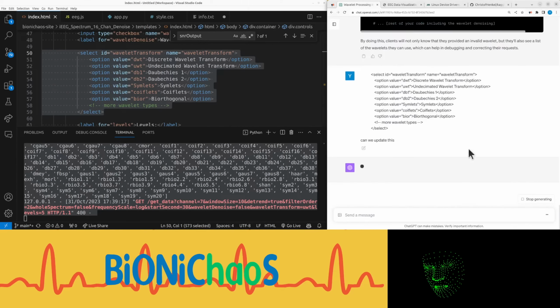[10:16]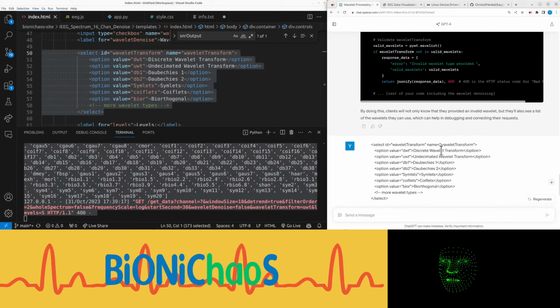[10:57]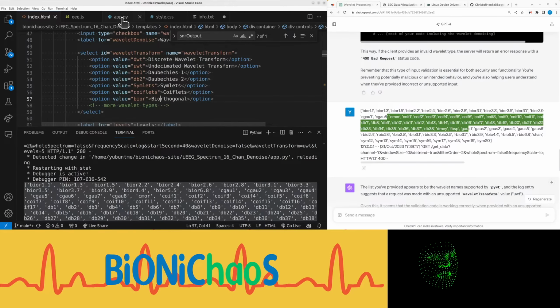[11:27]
Oh, but how do we? Can we update this HTML bit? Can we update this? Wait a second, so those actually... So those should be correct responses, is it? The WT? No. Okay.
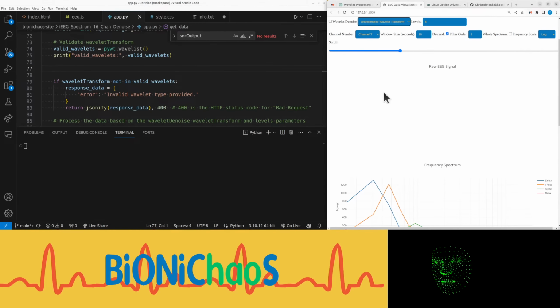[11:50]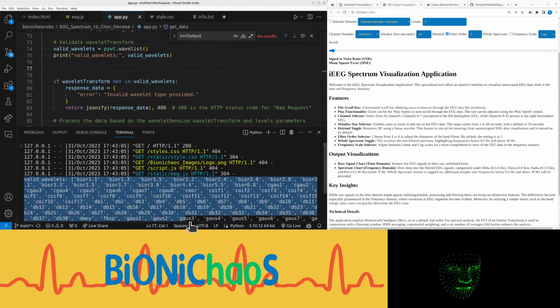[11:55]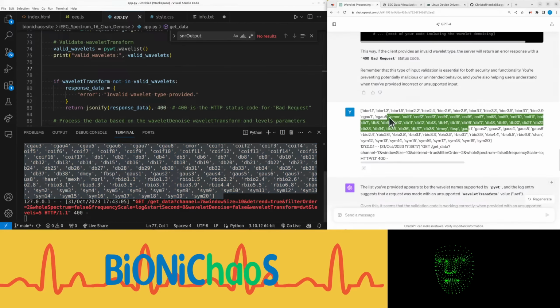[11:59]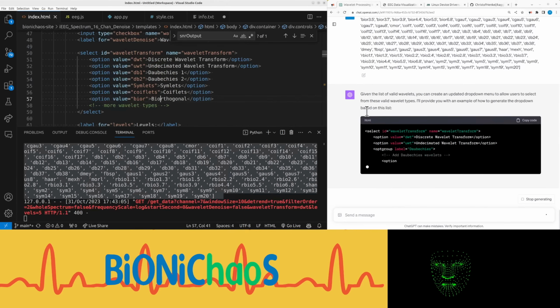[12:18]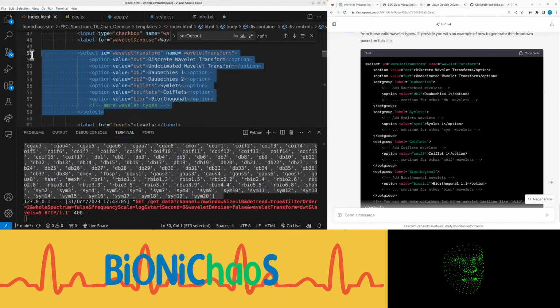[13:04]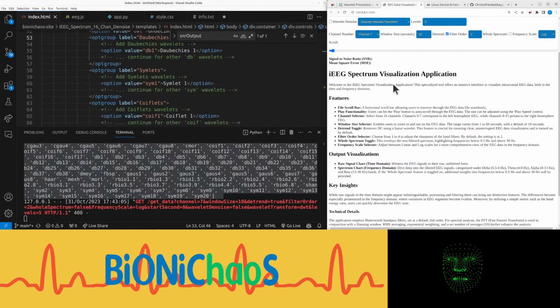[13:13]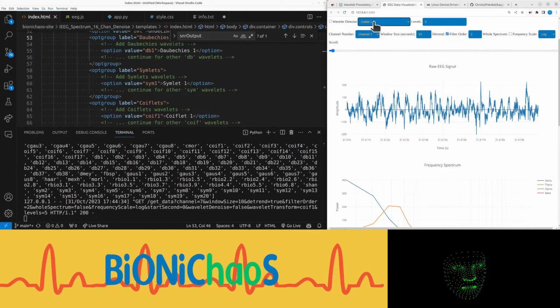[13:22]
We want to update this with the valid wavelets. Need to clear that. Run this. Add the valid wavelets. Do you understand the context? Okay, updating the value. This value is not a valid value. Or is it okay? Okay, let's try this. It should be updated. It's not giving an error now.
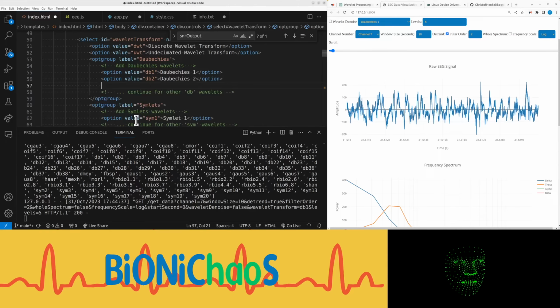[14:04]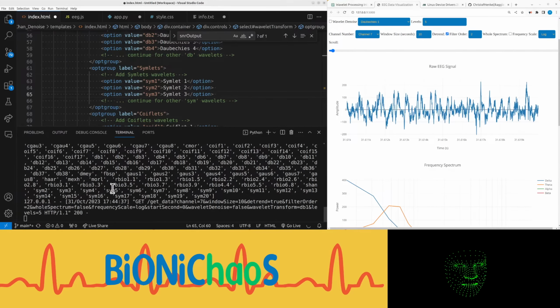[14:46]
Okay, we might add more later. Should we do it now? Because we'll forget later, wouldn't we? Okay, give me... Right. It's the db3. Yeah, there's a gazillion of them. Okay, let's just add 4. Should be enough. Okay, you know what to do, don't you? Is that sym2? Yes. Right. Okay, that's enough.
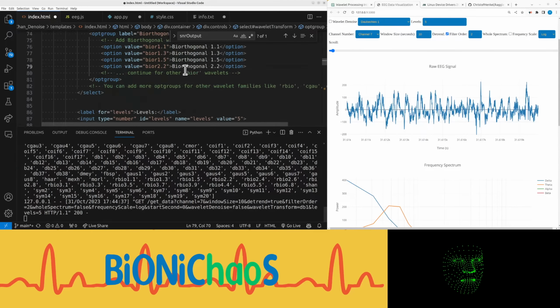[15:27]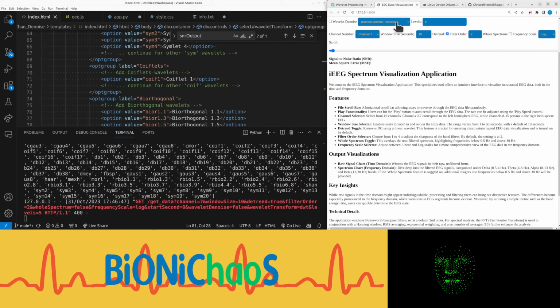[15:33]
Biorthogonal. Come on, GitHub Copilot. Why aren't you doing it by yourself? Shouldn't be hard, should it? There is no 1.2, so thank you for that. Yeah, there's 1.1, 1.3, 1.5, and 2.2. Okay, we'll leave it at that for now. Oops.
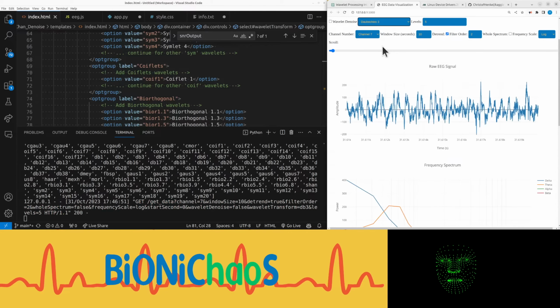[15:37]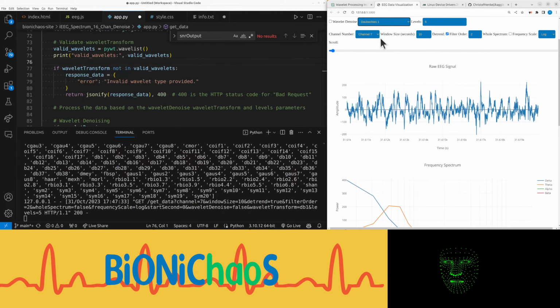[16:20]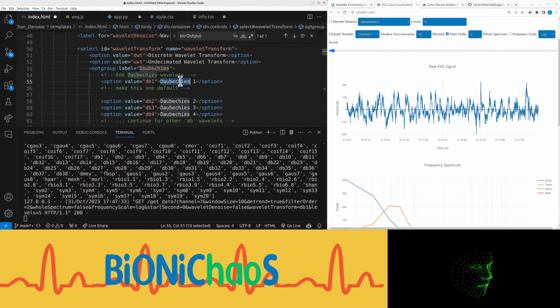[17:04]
Yeah, this. We need another input for... let me check. Yeah, let's make this one default in HTML. How do we do this? Default. No. Come on. Give me something. Nothing.
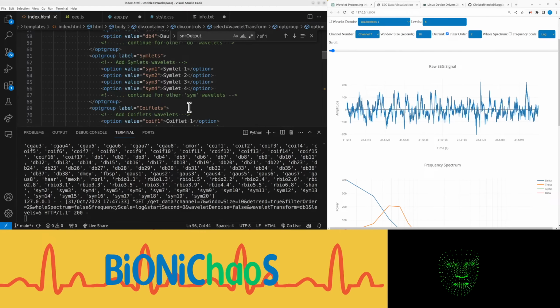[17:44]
Yeah, GitHub Copilot. It's either I don't know how to use it, or it's absolutely hopeless. One sec, what are we doing? Missed this one.
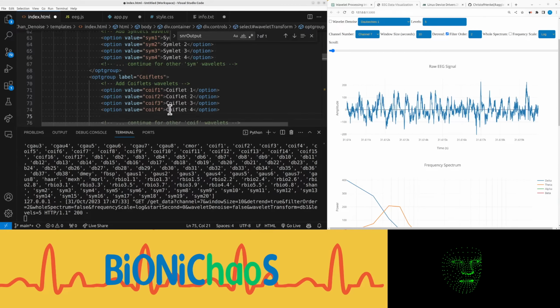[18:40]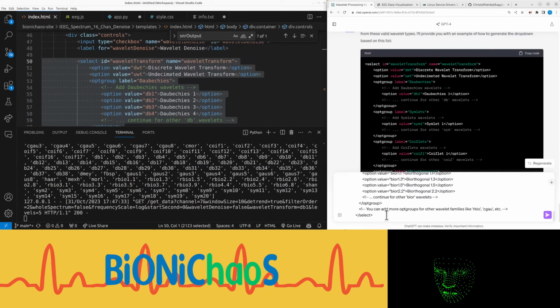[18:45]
Well, having a problem. Can we make default option? Can't spell.
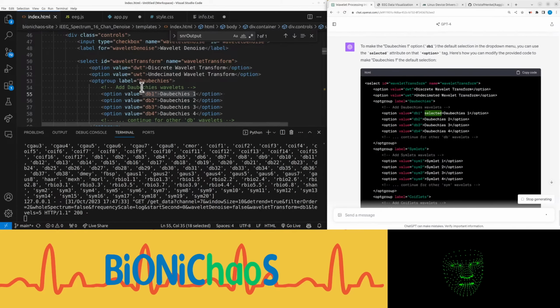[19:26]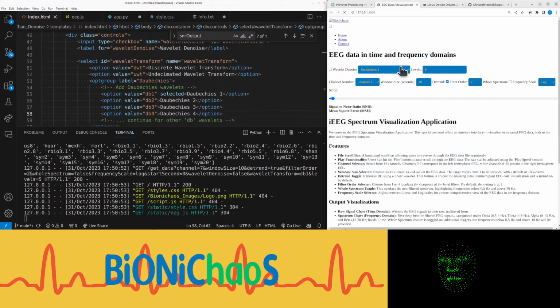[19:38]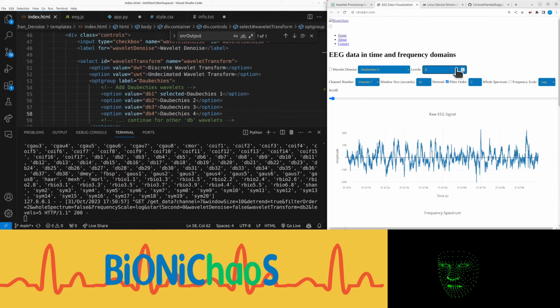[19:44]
Yeah, GitHub Copilot can learn from ChatGPT how to modify code. Yeah, I just need to add the word selected there. Right, so now we have DB1 as default. Now, obviously this should change the signal.
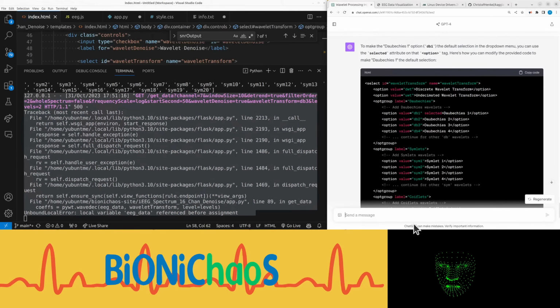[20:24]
Okay, this stopped working. Okay, what's up? I think I had this error before. How to fix? Can you fix this?
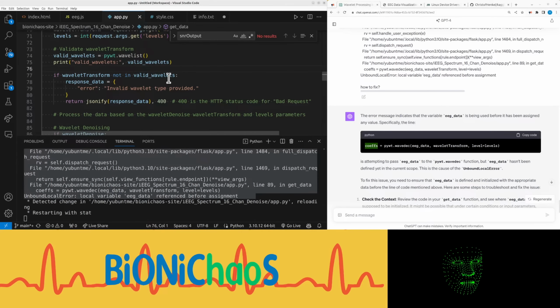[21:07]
The error message indicates that the variable eeg_data is being used before it had been assigned any value. Specifically, the line. I haven't saved this file as well. What was the last change?
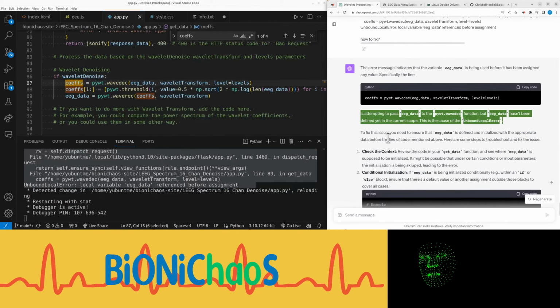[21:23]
So this line is doing what? Is attempting to pass eeg_data to the pywt.wavedec function, but eeg_data hasn't been defined yet in the current scope. This is the cause of the unbound local error. To fix this issue, you need to ensure that eeg_data is defined and initialized with the appropriate data before the line of code mentioned above. Here are some steps to troubleshoot and fix the issue.
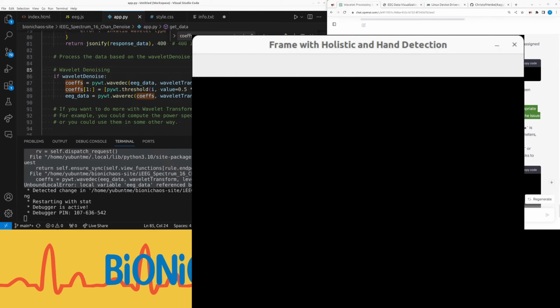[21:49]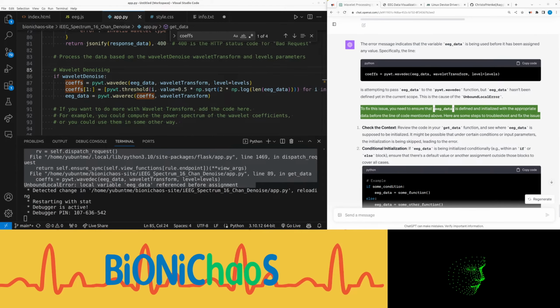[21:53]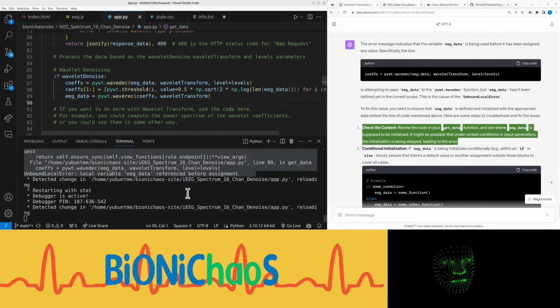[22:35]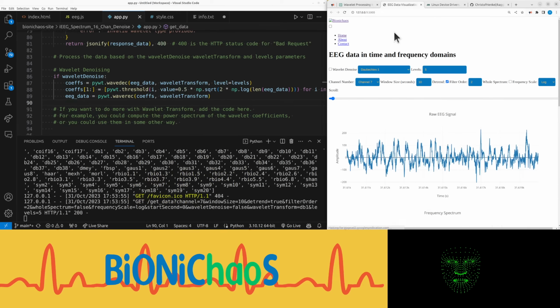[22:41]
Yeah, what do I have to do? Check the context, review the code in your get_data function, and see where eeg_data is supposed to be initialized. It might be possible that under certain conditions or input parameters, the initialization is being skipped, leading to the error. So line 87. It's not indicating any problem. Just restart the thing.
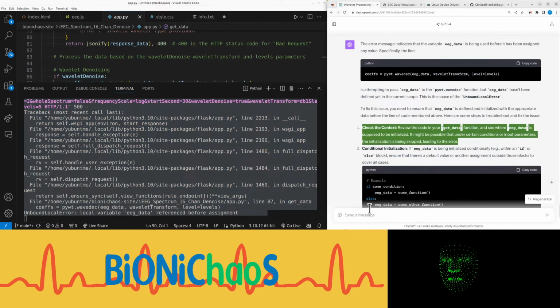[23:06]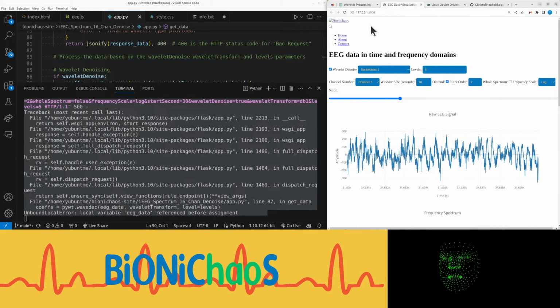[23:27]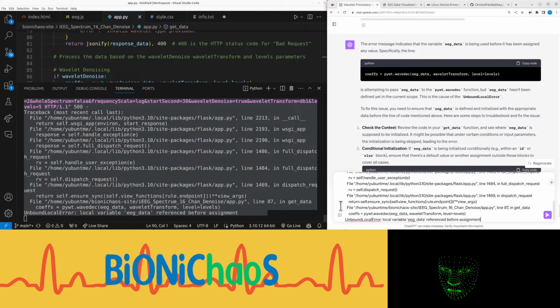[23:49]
Okay, it's working okay. When I hit wavelet denoise, I get this error only when selecting wavelet denoise is on, and this is the error. Can you give me a more specific answer?
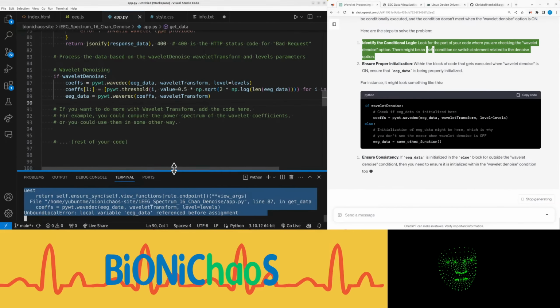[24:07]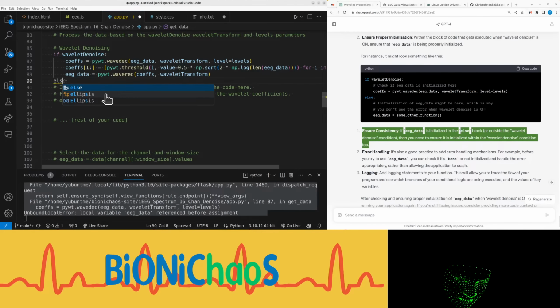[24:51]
Yeah, if wavelet denoise is over there, what's the problem? Ensure consistency. If eeg_data is initialized in the else block or outside the wavelet denoise condition, then you need to ensure it is initialized within the wavelet denoise condition too. Yeah, it doesn't have an else function. Gonna try.
Copilot is doing something. Right. Do some manual with printing coefficients. Why? Not sure. Ensure consistency. If eeg_data is initialized in the else block or outside the wavelet denoise condition, then you need to ensure it is initialized within the wavelet denoise condition too.
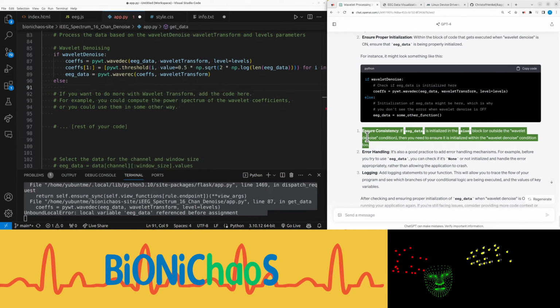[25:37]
Okay, error handling is good. It's also a good practice to add error handling mechanisms. For example, before you try to use eeg_data, you can check if it's none or not initialized and handle the error appropriately, rather than allowing the application to crash. Logging. Add logging statements to your function. This will allow you to trace the flow of your program and see which branches of your conditional logic are being executed, and the values of key variables.
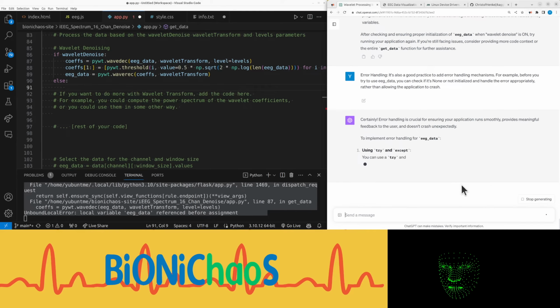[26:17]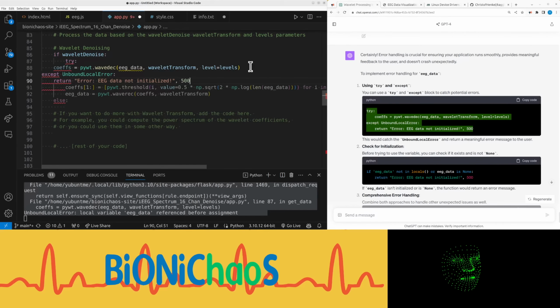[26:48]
Okay, let's do some more error handling. It should help. Let's try. Okay, so instead of, oops. Okay. Right. This would catch the unbound local error and return a meaningful error message to the user.
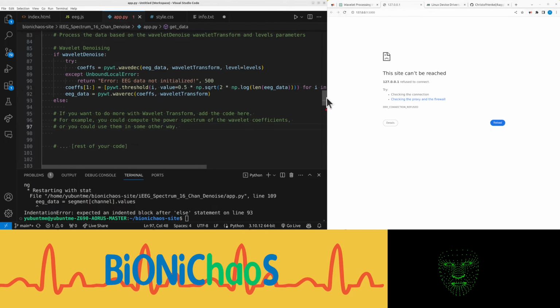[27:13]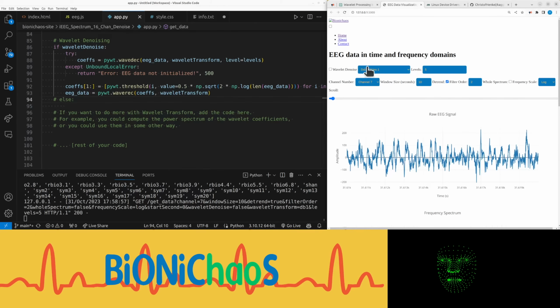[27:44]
Okay, now the app is having an error. Don't have else yet. Okay, so this is running okay. Why is this not sending this?
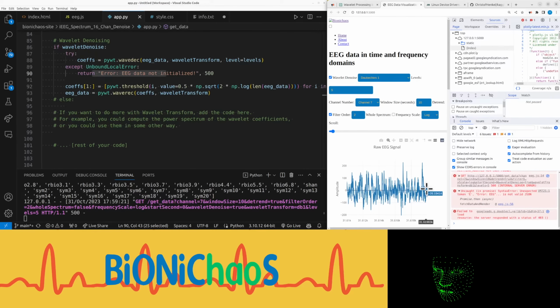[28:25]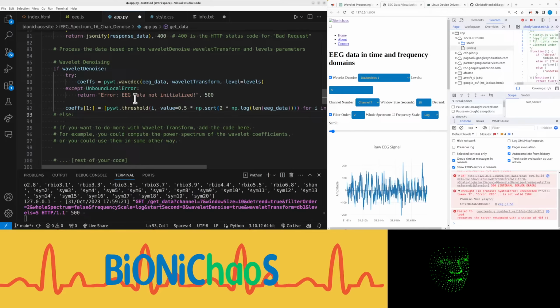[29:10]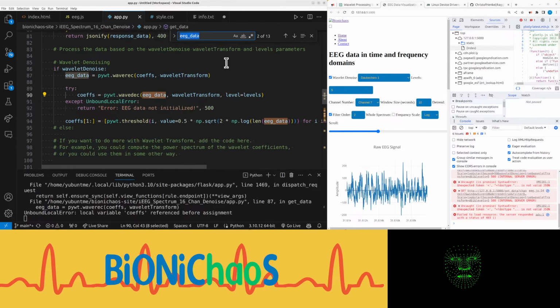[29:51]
Okay. What am I doing wrong? What am I doing wrong? If wavelet denoise, this should just be reverse. Multi-level discrete wavelet transform. Yeah, this doesn't make any sense.
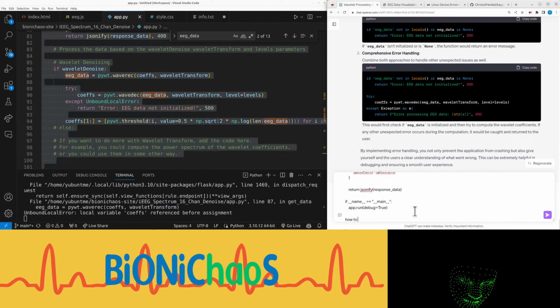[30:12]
Now to fix the code. Sorry, no super long prompts. I'll probably get a timeout soon. But I'm just trying to understand what's going on.
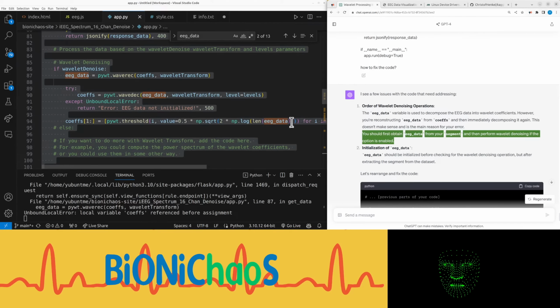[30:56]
The EEG_data variable is used to decompose the EEG data into wavelet coefficients. However, you're reconstructing EEG_data from coeffs and then immediately decomposing it again. This doesn't make sense and is the main reason for your error. You should first obtain EEG_data from your segment and then perform wavelet denoising if the option is enabled. EEG_data should be initialized before checking for the wavelet denoising operation, but after extracting the segment from the dataset.
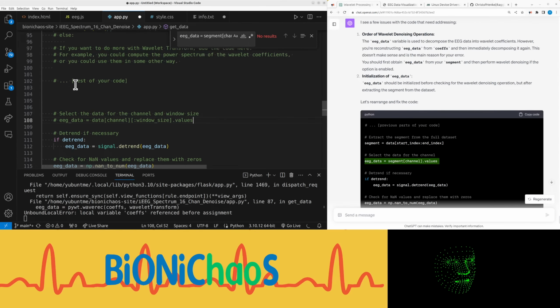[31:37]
Okay. So we have that. We have this. Right, so this should come first. Yeah, don't want any comments like that too. Because it's obvious that that's a continuation of the code.
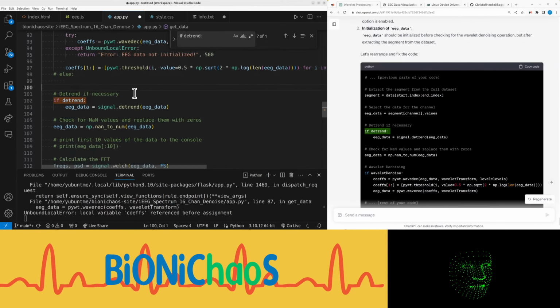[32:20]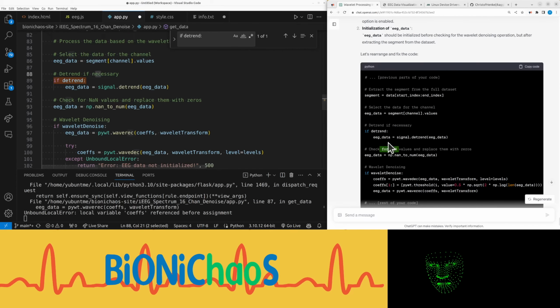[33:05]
Where is if? Do we have if detrend? We do. Okay, now I'm really confused. Yeah, that's just checking for nans. So this should go EEG data, then detrend if necessary, then removing checking for nans, and then wavelet denoising.
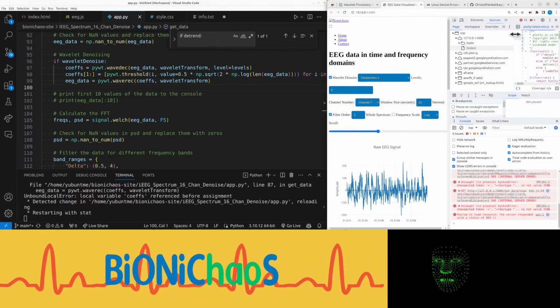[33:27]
Rest of the code. Okay, let's try this. It's restarting the thing. Let's refresh. This is working. Okay, that's working. And it's actually doing something. So it's removing some noise.
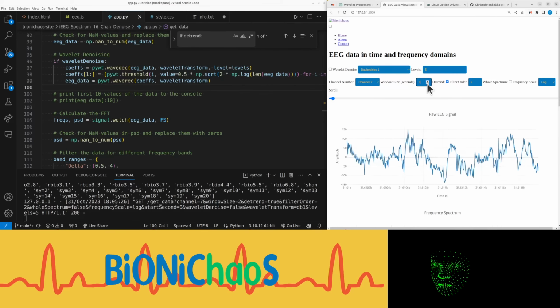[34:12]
This is actually only useful up to a very limited point. Let's reduce the window size. Yeah, so you can see the noise reduction there. So yeah, ChatGPT 4 does know something about EEG. It's a particularly noisy channel.
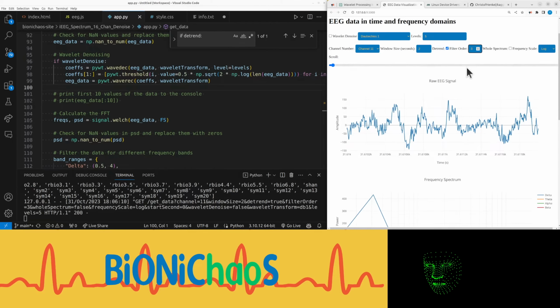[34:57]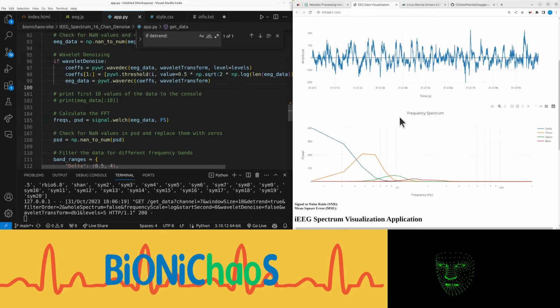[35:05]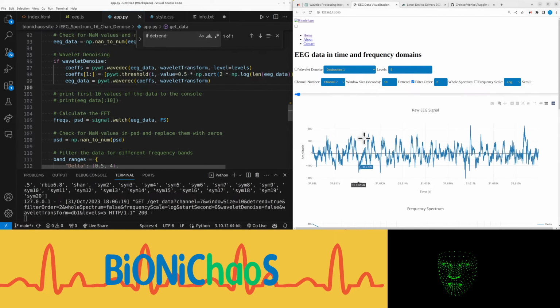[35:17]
This is detrending. This filter orders only. Yeah, we need to restructure the whole thing. We could actually just, okay, let's try this again. Yeah, I want to know how to.
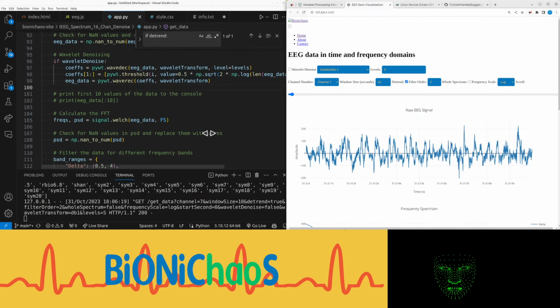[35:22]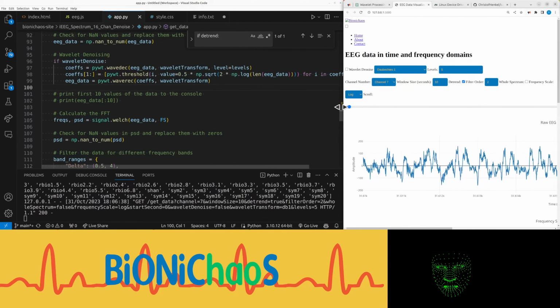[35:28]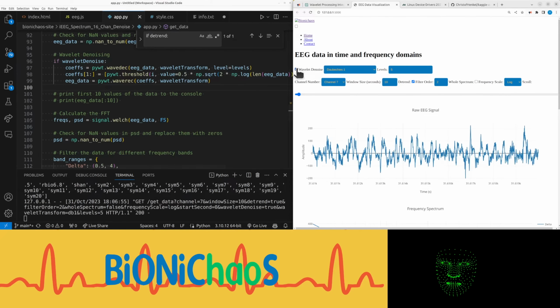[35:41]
So on the larger screen, ideally everything will be set from left to right. On a smaller screen, on a tablet or phone, obviously it will have to go top to bottom. But otherwise, it's actually working. It's actually doing something useful.
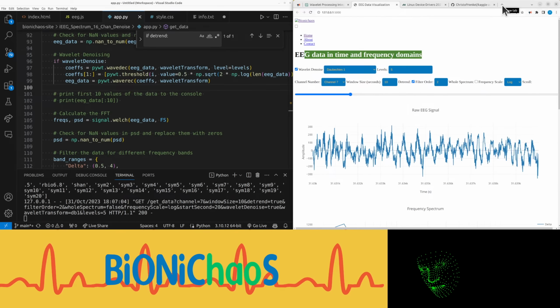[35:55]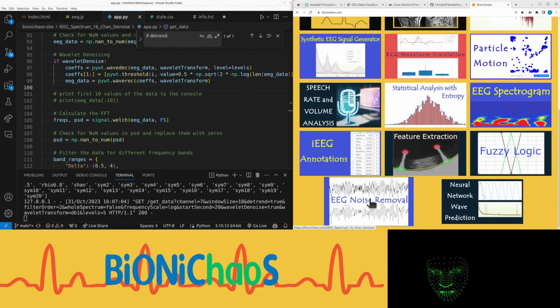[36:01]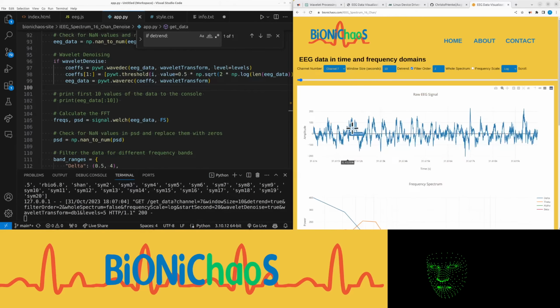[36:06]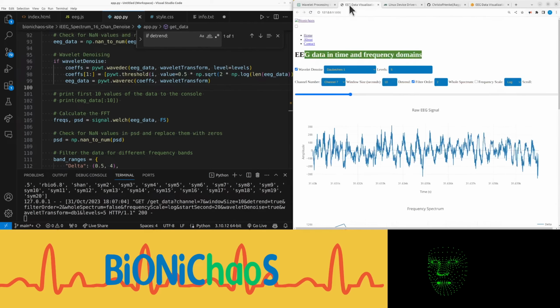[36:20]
So next thing will be patching it up a bit and publishing on the site. So instead of this one here, we'll probably put it up top there. So it will eventually look at least as good as this one, if not, should be much better. So hopefully you'll be able to test it yourself. Oh, is it going?
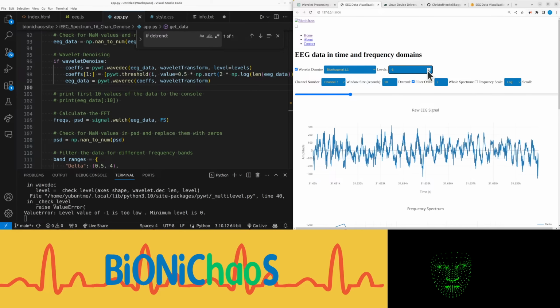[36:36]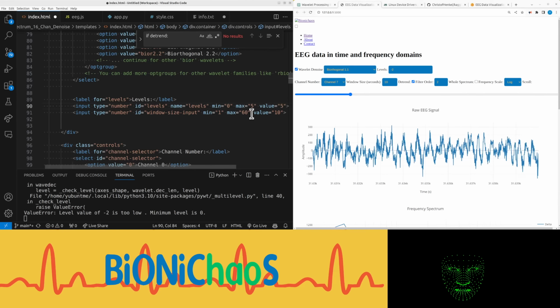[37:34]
Yes, this levels in HTML should be limited. Levels value should have a min and max like that. Well, would 0 just be the same as having it off? Yeah, let's make it 5 and default about 2. Right.
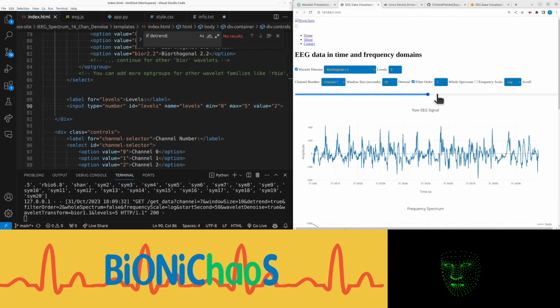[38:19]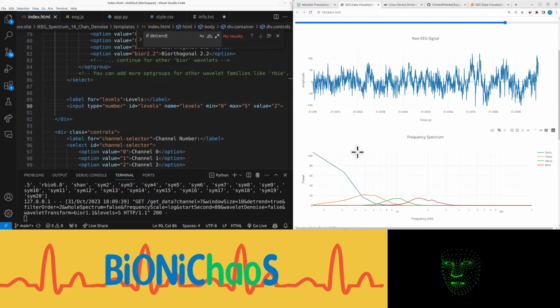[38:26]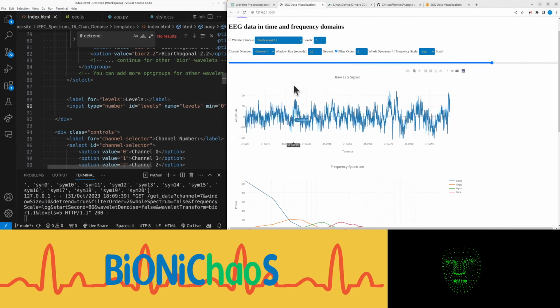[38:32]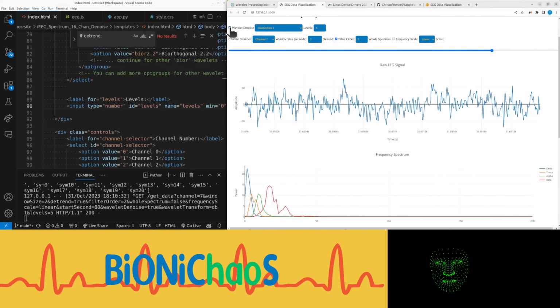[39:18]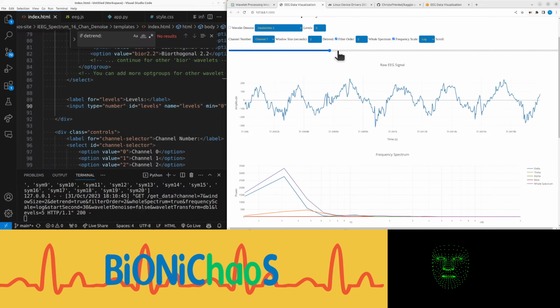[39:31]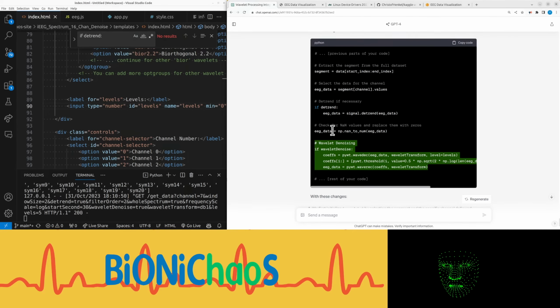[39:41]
Yeah, there's not much difference between the different wavelet types. Now the other thing is, when I change it, the frequency spectrum is updating as well, which is good. Yeah, it's changing by very little. The question is, this is working now with no errors.
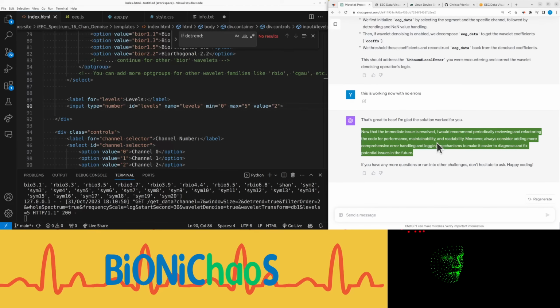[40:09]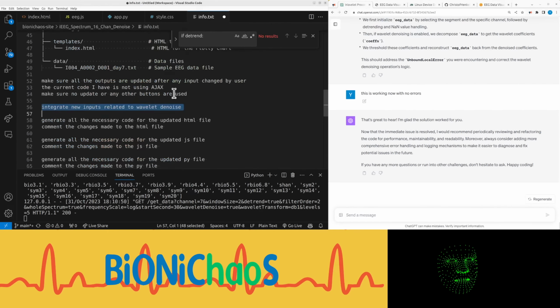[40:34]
Now that the immediate issue is resolved, I would recommend periodically reviewing and refactoring the code for performance, maintainability, and readability. Moreover, always consider adding more comprehensive error handling and logging mechanisms to make it easier to diagnose and fix potential issues in the future. Right. So the thing is, so we did that.
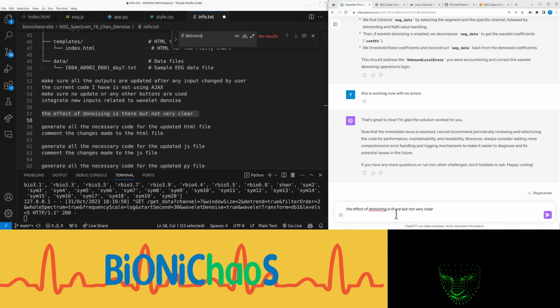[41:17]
The effect of the denoising is there, but not very clear. Let's see what it says. Maybe it definitely knows way more than I do.
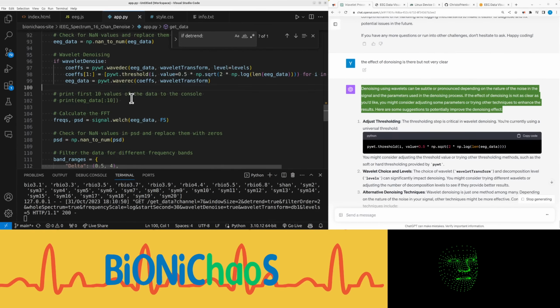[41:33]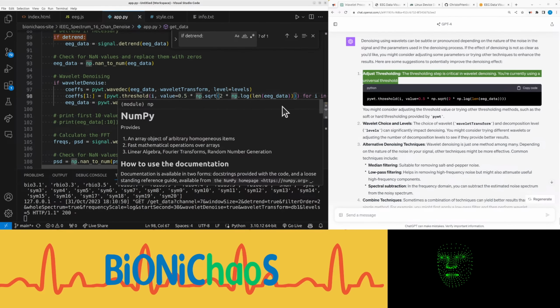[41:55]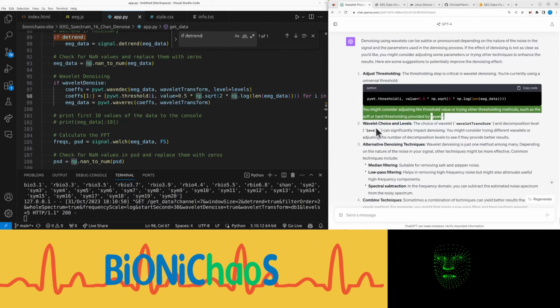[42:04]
Denoising using wavelets can be subtle or pronounced depending on the nature of the noise in the signal and the parameters used in the denoising process. If the effect of denoising is not as clear as you'd like, you might consider adjusting some parameters or trying other techniques to enhance the results. Here are some suggestions to potentially improve the denoising effect. Adjust thresholding. The thresholding step is critical in wavelet denoising. You're currently using a universal threshold. You might consider adjusting the threshold value or trying other thresholding methods, such as the soft or hard thresholding provided by PyWT.
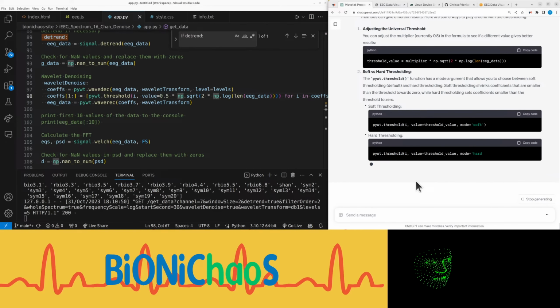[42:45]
Okay. Wait, that sounds very interesting. Can you give me the details? Certainly, the thresholding method you use in wavelet denoising can significantly affect the results. The method you're currently using is known as the universal threshold. Adjusting it or using other methods can give different results. Here are some ways to play around with the thresholding. You can adjust the multiplier, currently 0.5, in the formula to see if a different value gives better results. Should I have it as an input?
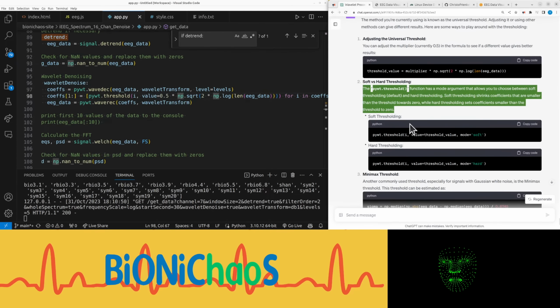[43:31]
The PyWT threshold function has a mode argument that allows you to choose between soft thresholding, default, and hard thresholding. Soft thresholding shrinks coefficients that are smaller than the threshold towards 0, while hard thresholding sets coefficients smaller than the threshold to 0. Another commonly used threshold, especially for signals with Gaussian white noise, is the minimax threshold. SureShrink is a method that aims to minimize mean squared error, MSE. It involves a bit more computation, but can sometimes give better results than the universal threshold, especially for signals with non-Gaussian noise. BayesShrink is another adaptive thresholding method that's based on a Bayesian framework. The main idea is to estimate the threshold based on the variances of the signal and noise. It requires additional computation but can be more robust in certain situations.
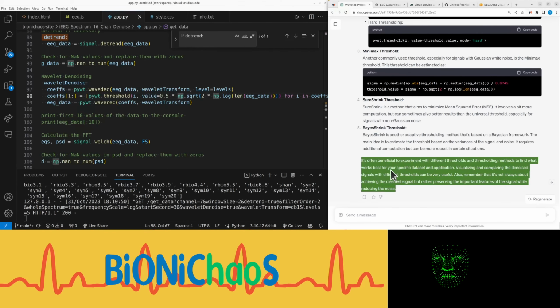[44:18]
It's often beneficial to experiment with different thresholds and thresholding methods to find what works best for your specific dataset and application. Visualizing and comparing the denoised signals with different thresholds can be very useful. Also, remember that it's not always about achieving the cleanest signal, but rather preserving the important features of the signal while reducing the noise. Wow, you're so smart. Okay. So yeah, let's add the multiplier.
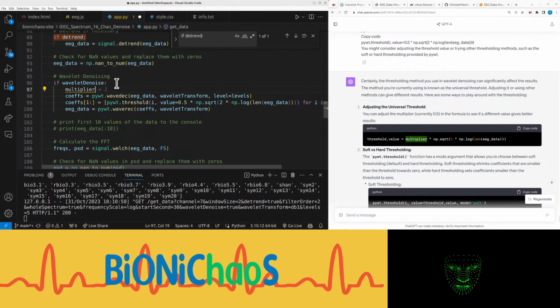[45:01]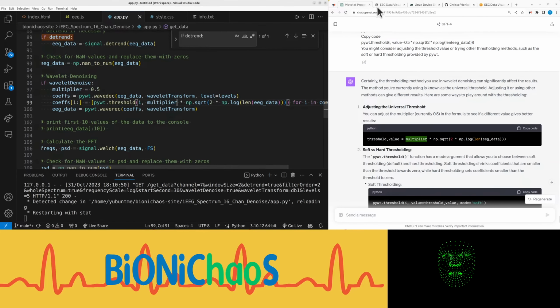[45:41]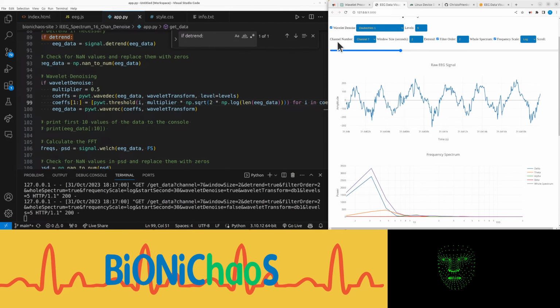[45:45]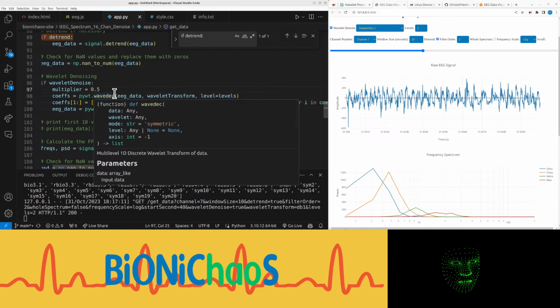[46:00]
We might continue this next time, but yes, we made quite a bit of progress; the denoising actually works. I assume this number should be between 0 and 1. Yeah, it's definitely, the original thing was 0.5, so
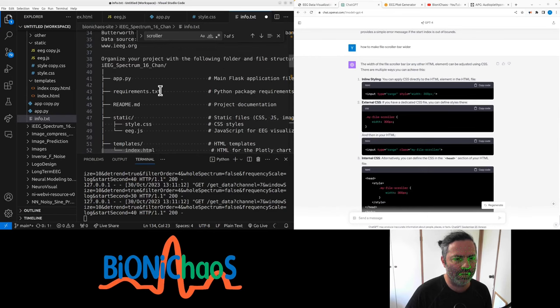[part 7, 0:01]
We need a requirements file. Well, we don't have to have it, but it's good for reference.
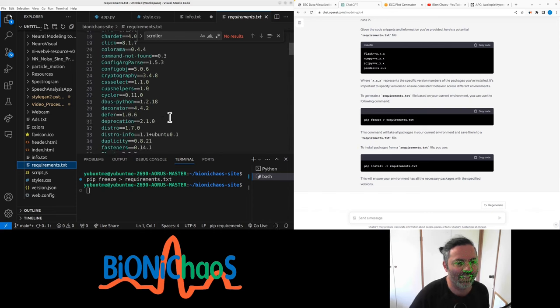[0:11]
This is crazy. Okay, this is all you need to run Bionichaos. Not much at all. And half of it I'm not actually using, or more than half. Sad. I'm not actually using Jinja, I'm using Flask.
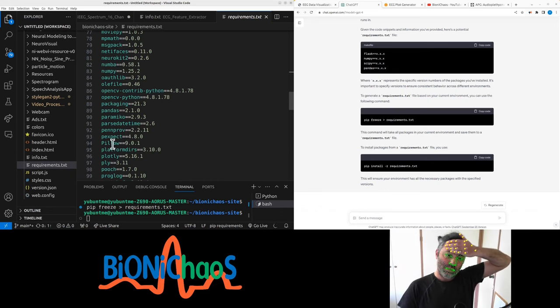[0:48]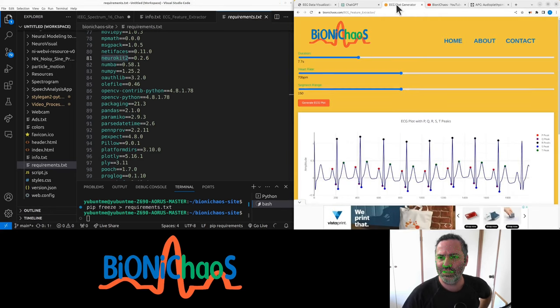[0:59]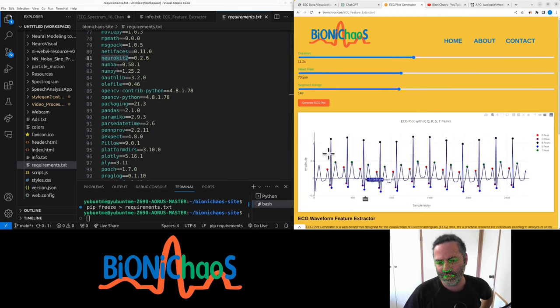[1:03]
Yeah, I use Plotly a bit, yes, Pandas. Yes, NeuroKit, it's the one we use for ECG, for this tool here. I mean, yeah, we generated code on top of it, but yeah, there is that. Our ones are only vaguely, remember.
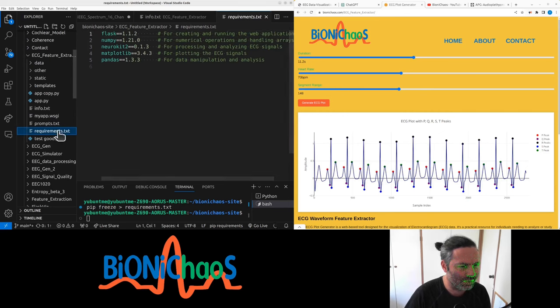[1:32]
SpyICU, I can swear some of them I see for the first time. Were some of them just installed by default? Yeah, I have to check. Anyway, there should be one specific for each project. So for example, this one here will only be using Flask, NumPy, NeuroKit, Matplotlib and Pandas.
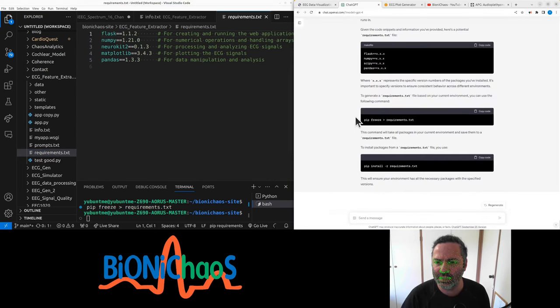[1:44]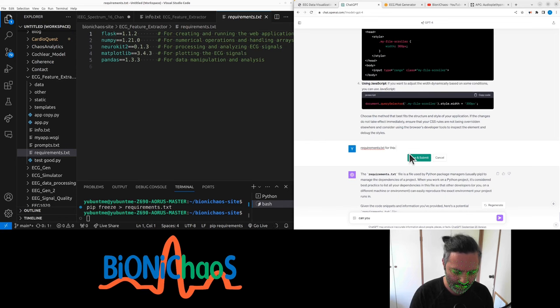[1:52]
So I was expecting GPT to write a specific one for those files. Can you do it for this project? Yeah, that's right. SciPy, NumPy, Flask, OS and Pandas.
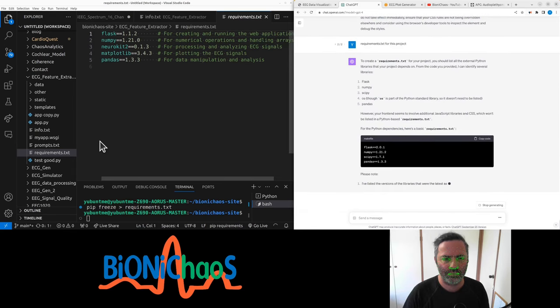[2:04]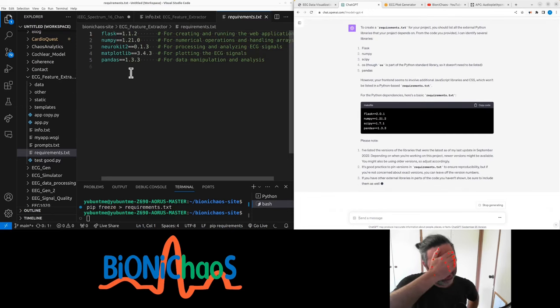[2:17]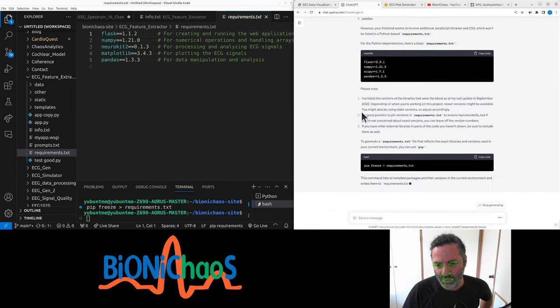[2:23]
Am I using Flask 2.0? Because my previous application has 1.1. And no, I don't have a virtual environment because it's the whole server, so I'm installing everything globally. So that's quite unusual, actually. Yeah, Flask.
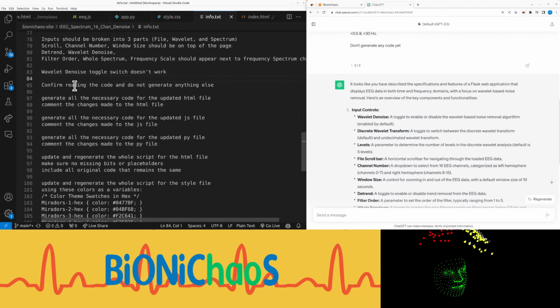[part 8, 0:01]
Sphere, channels 8 to 15. Window size, a control for zooming in and out of the EEG data, with a default window size of 10 seconds. Detrend, a toggle to enable or disable trend removal from the EEG data. Filter order, a parameter to set the order of the filter, typically ranging from 1 to 5.
Whole spectrum, a toggle to overlay the non-filtered spectrum, frequencies below 0.5 Hz and above 30 Hz. Frequency scale, an option to choose between linear and logarithmic frequency scales. Output display. Noise removal performance, displayed as signal-to-noise ratio, SNR, and mean square error, MSE, of the EEG signal.
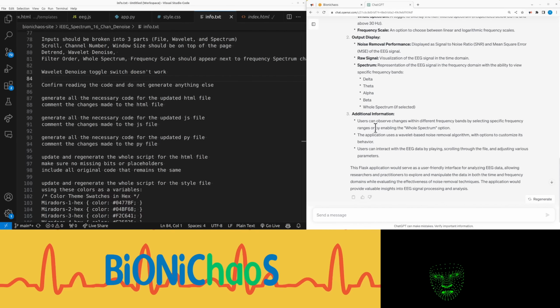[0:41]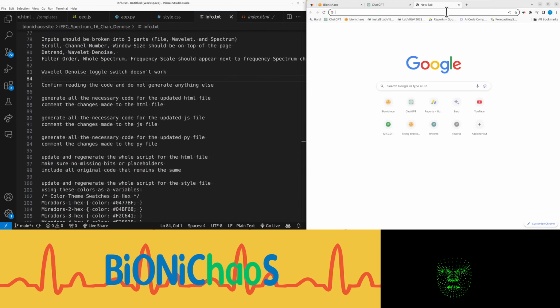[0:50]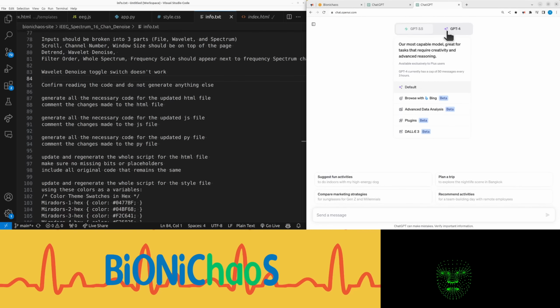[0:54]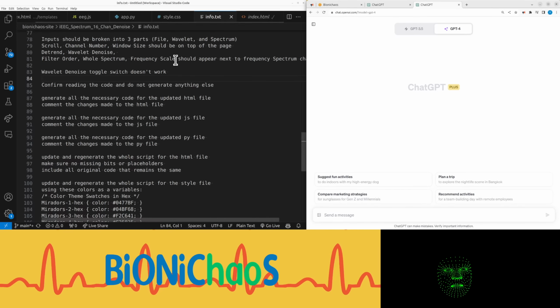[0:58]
Raw signal, visualization of the EEG signal in the time domain. Spectrum, representation of the EEG signal in the frequency domain with the ability to view specific frequency bands: delta, theta, alpha, beta, whole spectrum, if selected, additional information. Users can observe changes within different frequency bands by selecting specific frequency ranges or by enabling the whole spectrum option.
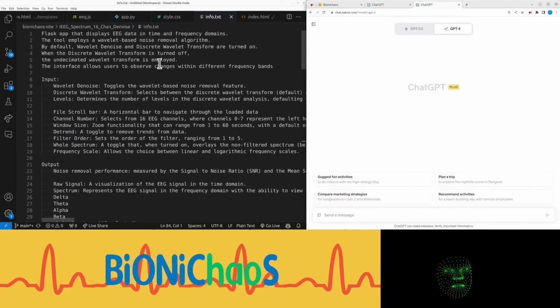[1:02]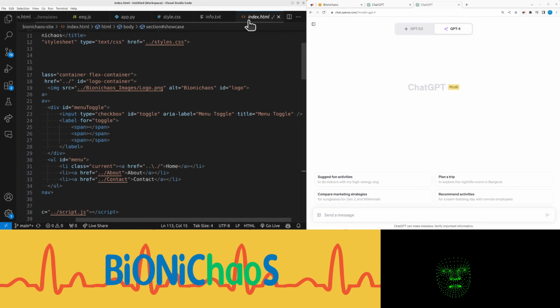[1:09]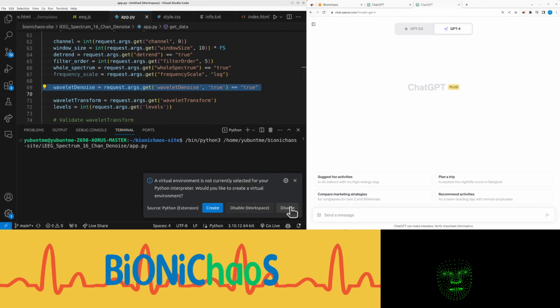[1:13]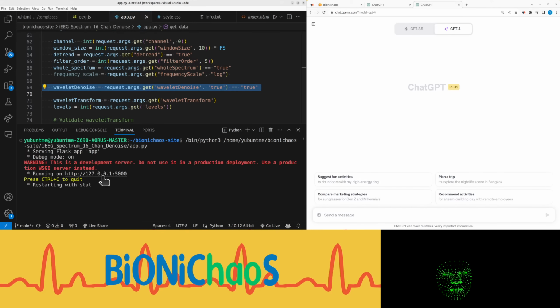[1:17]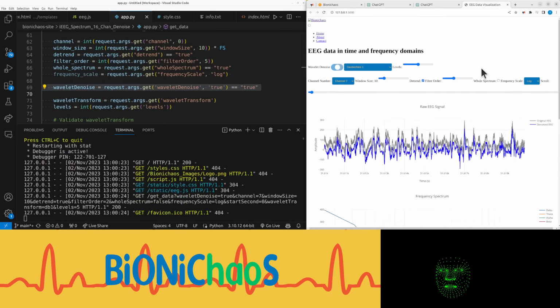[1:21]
The application uses a wavelet-based noise removal algorithm, with options to customize its behavior. Users can interact with the EEG data by playing, scrolling through the file, and adjusting various parameters. This Flask application would serve as a user-friendly interface for analyzing EEG data, allowing researchers and practitioners to explore and manipulate the data in both the time and frequency domains while evaluating the effectiveness of noise removal techniques. The application would provide valuable insights into EEG signal processing and analysis.
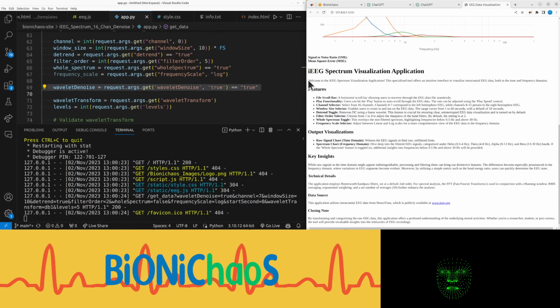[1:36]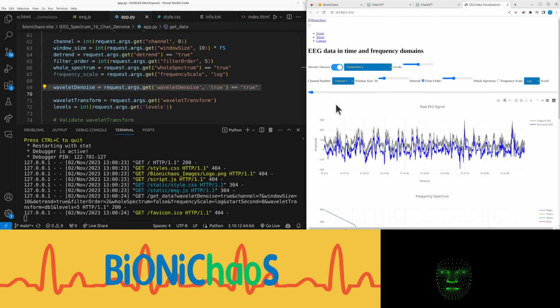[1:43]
Welcome to the IEEG Spectrum Visualization application. This specialized tool offers an intuitive interface to visualize intracranial EEG data, both in the time and frequency domains.
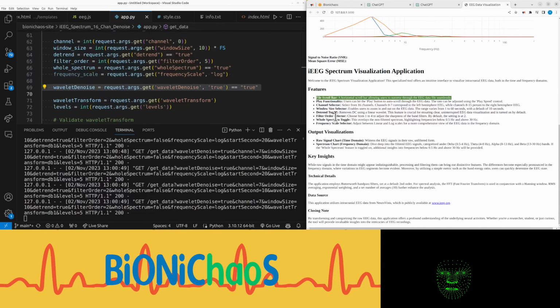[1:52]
File scroll bar, a horizontal scroll bar allowing users to traverse through the EEG data file seamlessly. Play functionality, users can hit the play button to auto-scroll through the EEG data. The rate can be adjusted using the play speed control.
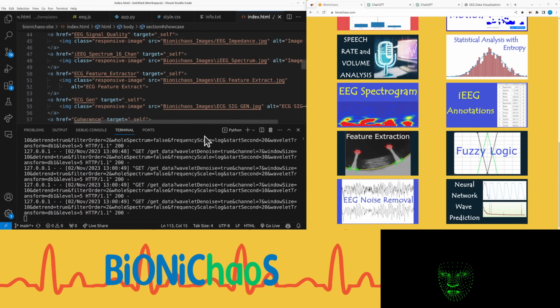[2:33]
Yeah, we'll start developing in a second. We're currently on this EEG noise removal thing. Just in the project itself, move it up at the top, just so it's clear what was updated last.
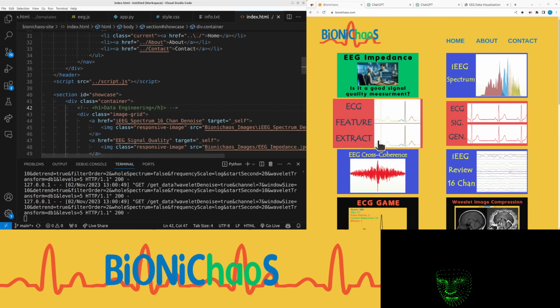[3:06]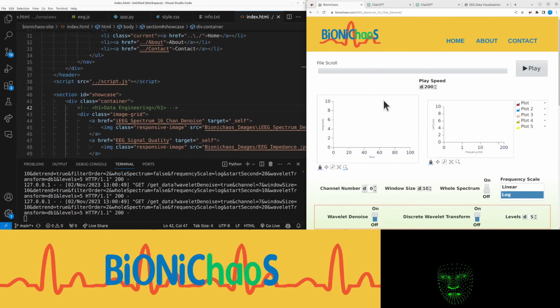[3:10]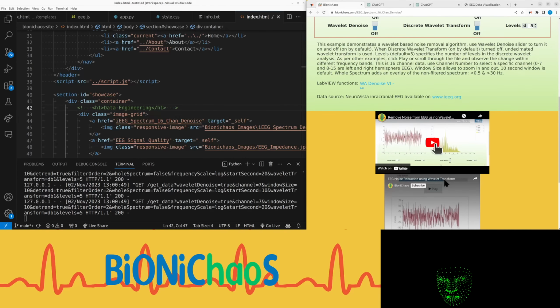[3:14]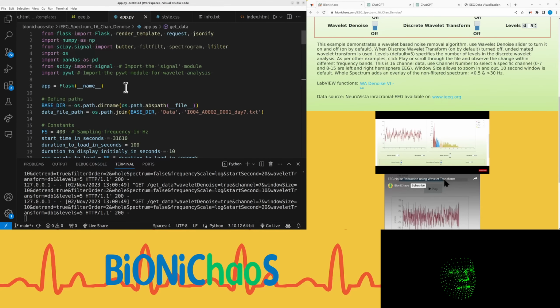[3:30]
This change is obviously not in production yet. So yes, that's the old thing that we had. We had some videos on it, but unfortunately it doesn't work anymore. That's why we are redoing this. It used to be LabVIEW, now it's Python, NumPy, SciPy, Pandas.
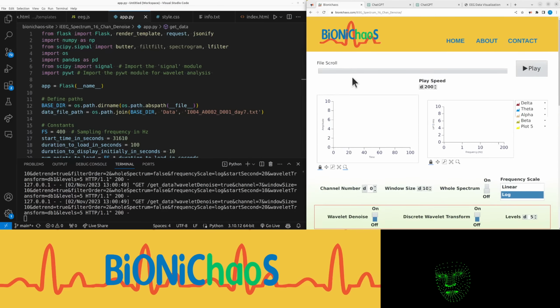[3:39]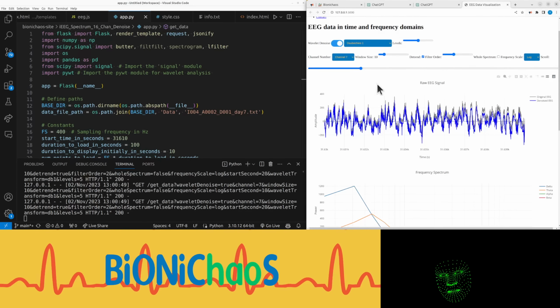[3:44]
And it kinda, yeah, it looks the same but different. This is what it's going to look like. Hopefully we can publish it today so we can have something to play with. Yeah, just quickly checking. This is a bit weird, but yeah, this toggle button is nice.
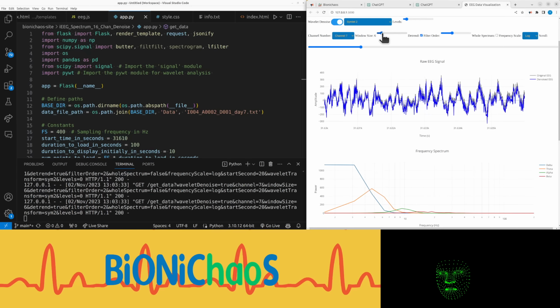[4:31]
Levels. Right, you can barely see its effect. So yeah, if it's level, be able to go all the way down to 0. Yeah, so that's the original signal and the noisy one next to it. There's a kind of natural DC in it. So when you hit the detrending, they're almost overlaid one on top of another. Yeah, you kind of see the noise there at the back.
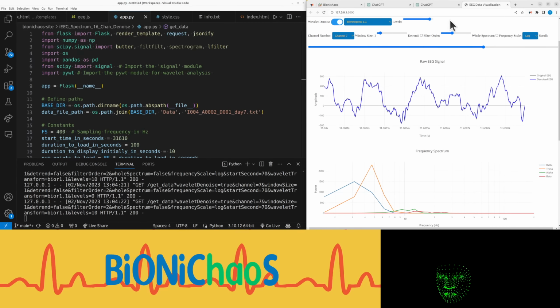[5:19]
Some of these wavelets will be doing more than others. Yeah, there's not really much difference between them. These two things don't work. I get a 400 error at the server. We'll have to fix that. We'll probably have to describe properly, make a proper prompt, so we can actually fix it.
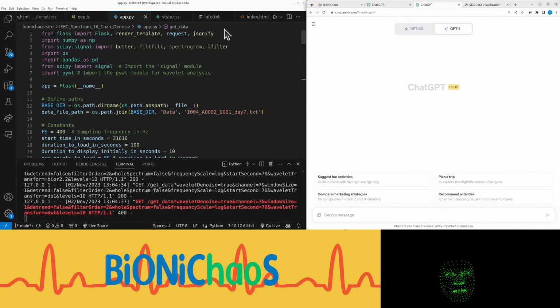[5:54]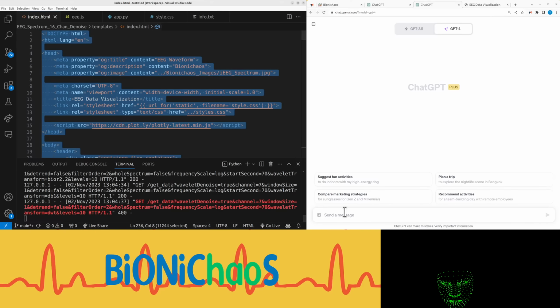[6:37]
Let's start populating. Yeah, let's start with the HTML file. Oops. Is this the same file? Right, that's... No, that's okay. Can close that. So we have the HTML popped into ChatGPT.
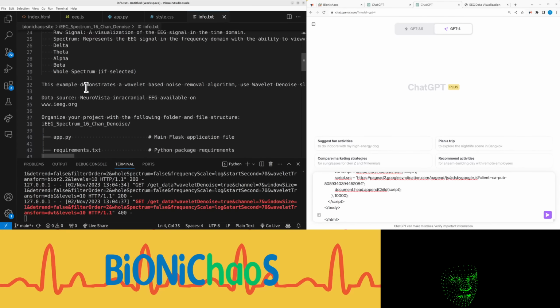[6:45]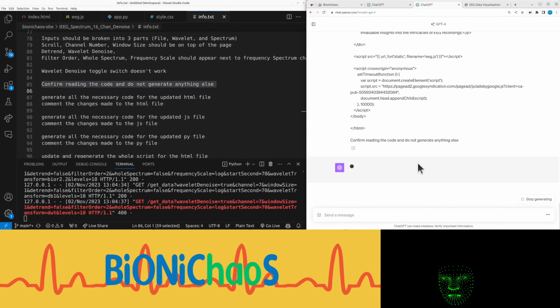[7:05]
And we have that line that was working quite successfully. Where is it? Yeah, confirm reading the code. Do not generate anything else. This bit is handy because normally it should respond with: I've read the HTML code you provided. It appears to be a web page for visualizing EEG, electroencephalogram, data with various controls for data processing and visualization. That's right. So thanks for confirming that.
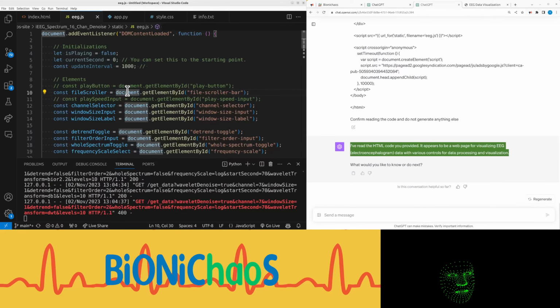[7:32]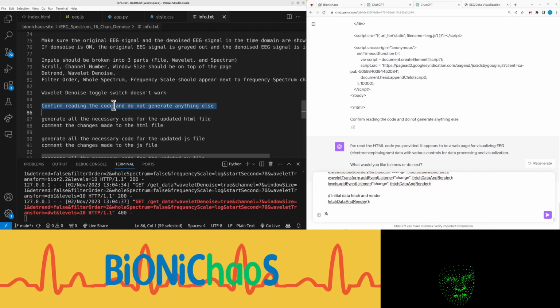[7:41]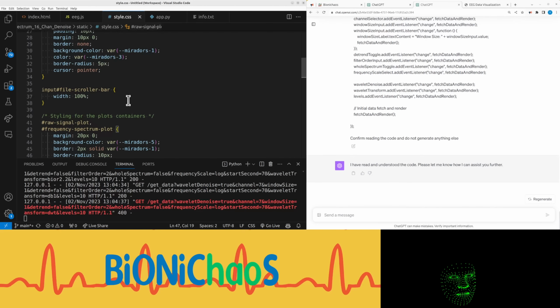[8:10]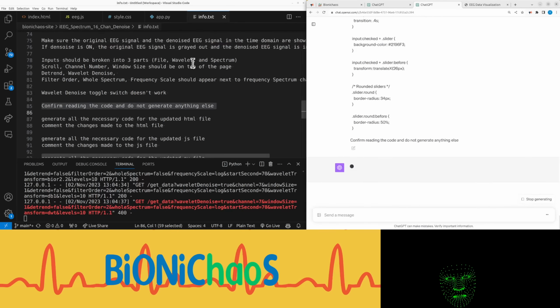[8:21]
Then next, let's pop in the JavaScript and the same prompt, but just reading, not generating anything else. I've read the code, that's great. It feels like it is important in what order this is done. Let's do CSS as well. Confirm reading, don't generate anything else. I've read and understood. Okay, it's giving itself human-like properties, which is a bit odd, but whatever works.
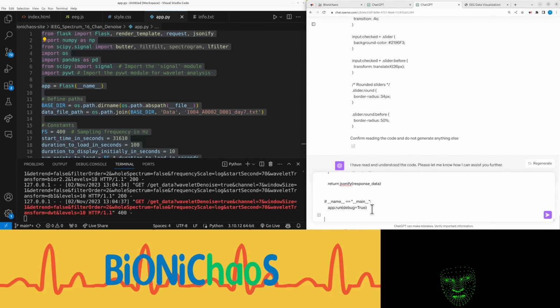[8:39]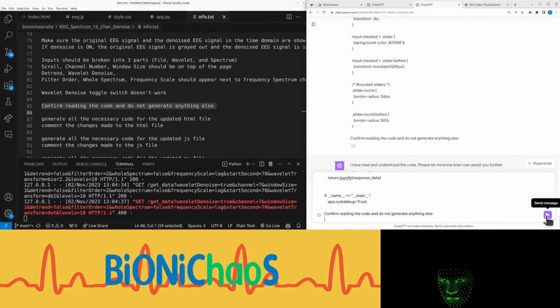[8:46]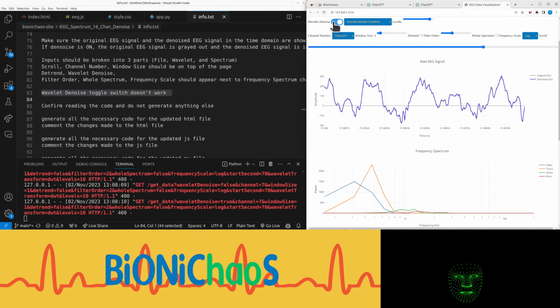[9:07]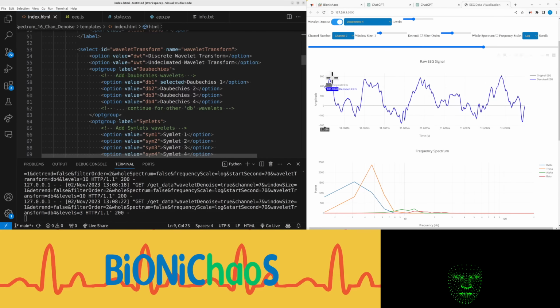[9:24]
And the last snippet of code is the Python Flask application. Right. So this switch now. Ooh. Yeah, the switch does work. It's the number of levels. It's going all the way to 0. Default is 5. That's okay.
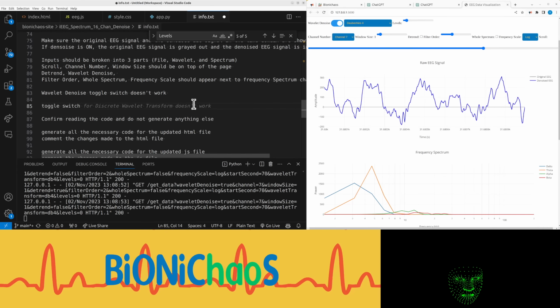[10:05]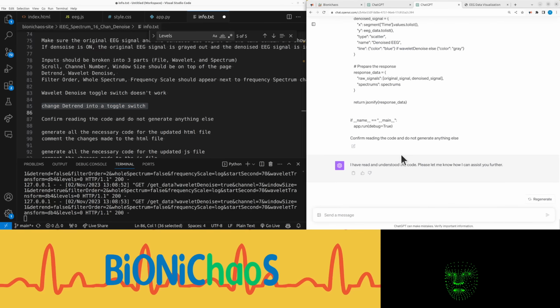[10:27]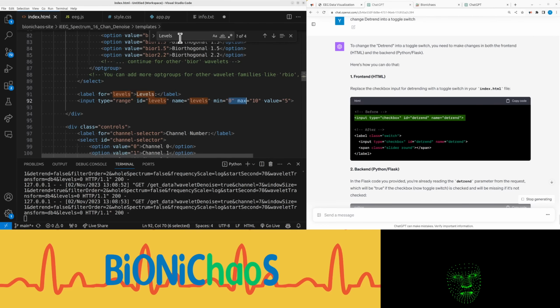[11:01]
Let's start with something simple. Change Detrend into a toggle switch. It's GPT-4, yes, yes. Let's see if it understands the context. It does. That's not very helpful because you can't copy the code when you have before and after. But we have detrend in HTML. Do we? It's actually called detrend toggle. It's already a toggle.
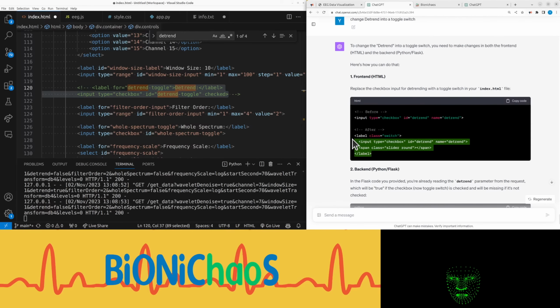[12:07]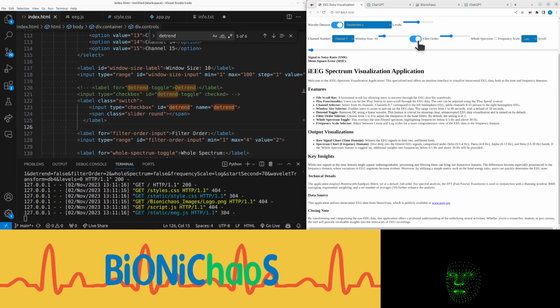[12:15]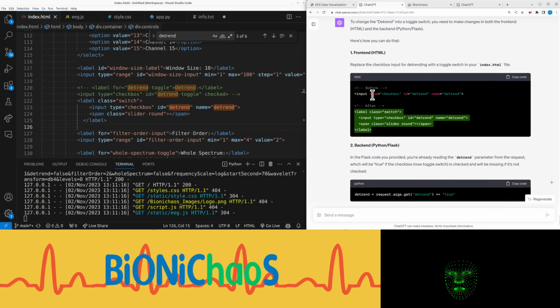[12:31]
We're replacing the whole thing. I guess so. Right, now it doesn't have the label. What else? In the Flask code you provided, you're already reading the detrend parameter from the request, which will be true if the checkbox, now toggle switch, is checked and will be missing if it's not checked.
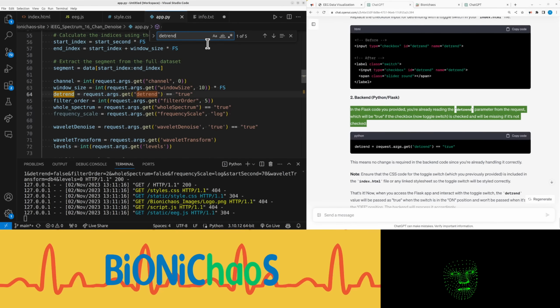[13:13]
Right, so we're actually checking for the ID, which is detrend toggle, and not detrend. No, actually, it is detrend. How is it even working at all? Okay, the ID was detrend. Yes, that's the same.
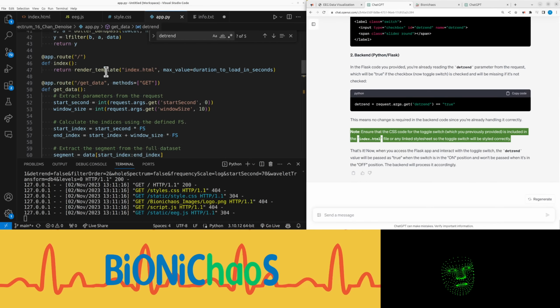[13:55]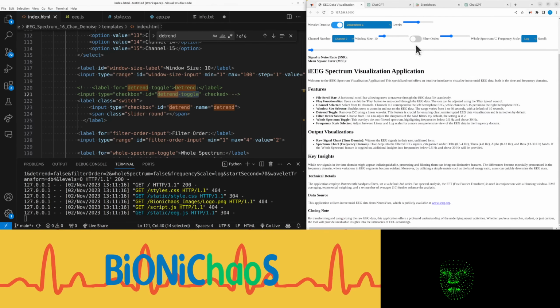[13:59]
This means no change is required in the back-end code since you're already handling it correctly. Note, ensure that the CSS code for the toggle switch, which you previously provided, is included in the index.html file or any linked stylesheet so the toggle switch will be styled correctly. Okay, now the only problem: it's not actually working, I guess because of the name.
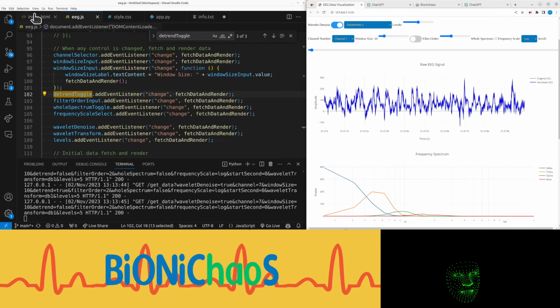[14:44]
Where's this name used in JavaScript? Yeah, it should be just detrend, is it? Right, now it's working. Yeah, just leave it as is. We just need the label. A checkbox, detrend switch.
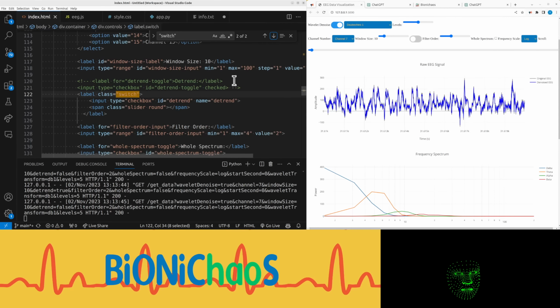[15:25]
We have another switch, with the noise. That goes on top there. Have detrend as name. Right, that's working fine. Later we'll rearrange the whole thing.
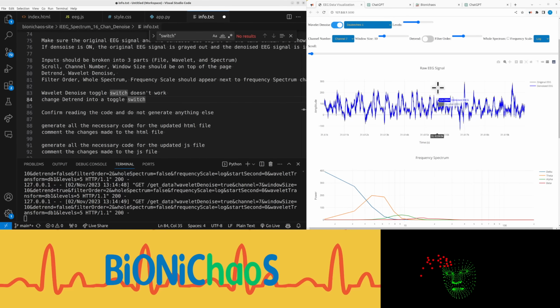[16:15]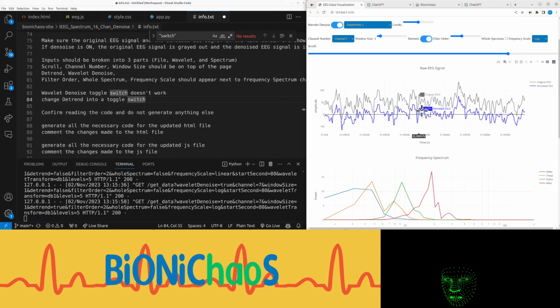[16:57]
Let's see, log. Log can be changed to a button. Don't like the drop downs. No, that can stay as is for now. Right. Okay, we're ready. If everything is working, we can publish this.
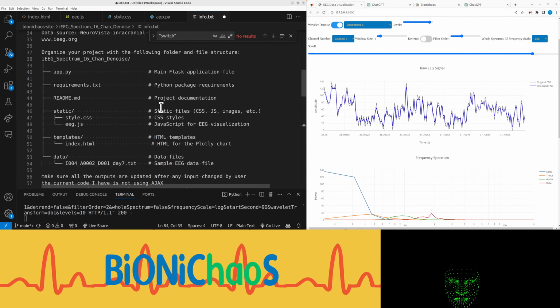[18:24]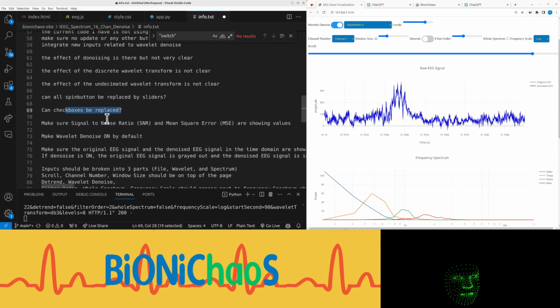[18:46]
Let me know what you think. Are we ready to publish? I would say yes if everything is functioning. There's still a problem with that. Let's go through this for a sec. The effect of denoising is not very clear, but is there. Okay, that's just the way it is.
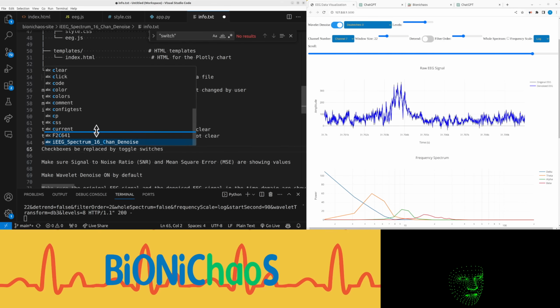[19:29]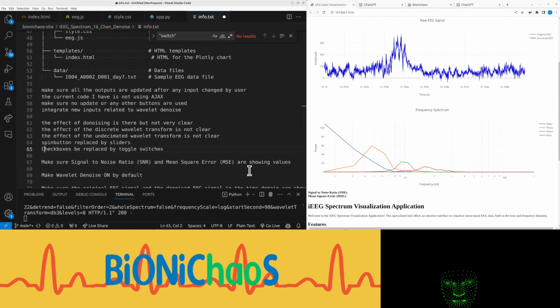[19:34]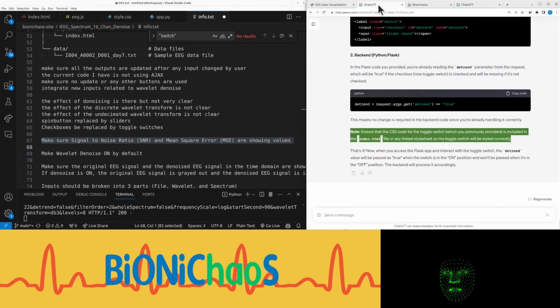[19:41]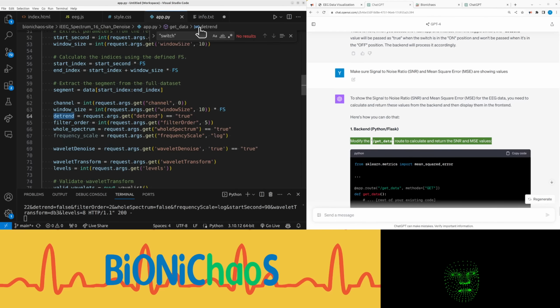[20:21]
So we want to make sure signal to noise ratio (SNR) and mean square error (MSE) are showing actual values. To show the signal to noise ratio, SNR, and mean square error, MSE, for the EEG data, you need to calculate and return these values from the back end and then display them in the front end. Here's how we do it. Modify the get_data route to calculate and return the SNR and MSE values.
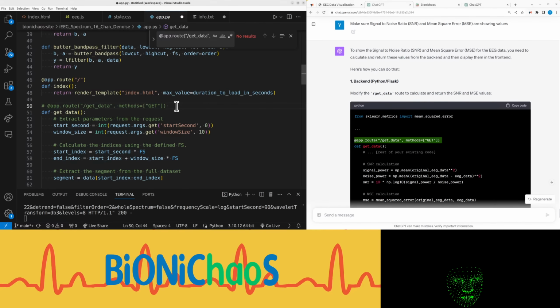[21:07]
Okay, we're using from sklearn.metrics import mean_squared_error. Let's find how GitHub Copilot works. It's already imported mean squared error, and from math it's trying to import square root. Well, we don't really need it, do we? Okay, now, what's this thing called anyway? This endpoint will be called from the client side to get the data.
The rest of the code is the calculation. Do I have anything in there at the moment? No. So at the end of this function, which is getting ridiculously long, I suspect later it will be really hard to troubleshoot if there are any problems.
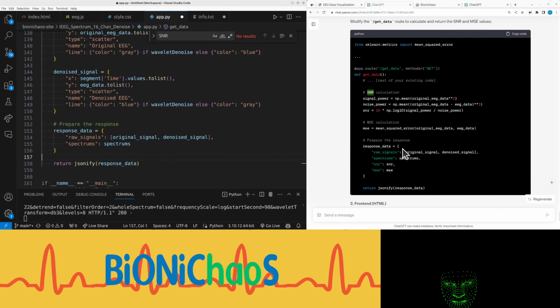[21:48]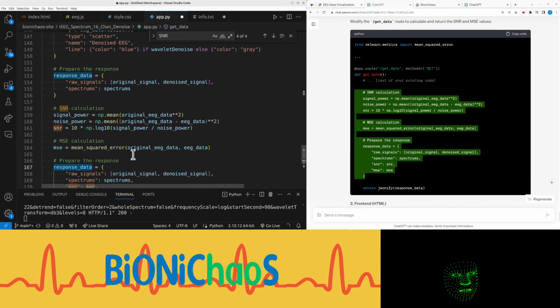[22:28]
We're doing this bit. # SNR calculation: signal_power = np.mean(original_EEG_data ** 2), noise_power = np.mean((original_EEG_data - EEG_data) ** 2), SNR = 10 * np.log10(signal_power / noise_power). # MSE calculation: MSE = mean_squared_error(original_EEG_data, EEG_data). # Prepare the response: response_data = {raw_signals, original_signal, denoised_signal, spectrums, SNR, MSE}.
Right, so it didn't tell us, but we need to replace it. We don't need this one anymore. SNR.
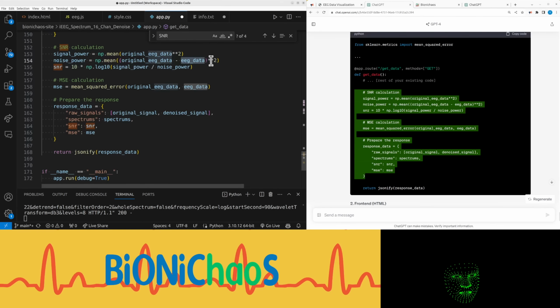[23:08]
Square root, is it? Okay. And the EEG data. It's the filtered EEG, so it should be legit. Oh yes, that's mean square error. That's okay, it's not getting much information.
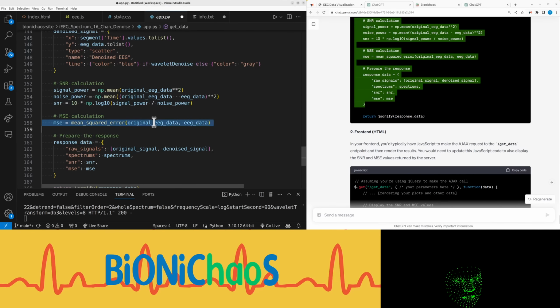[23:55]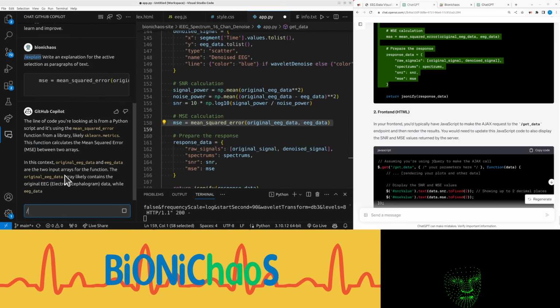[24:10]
Can I ask Copilot to explain this? Yeah, using sklearn metrics two input arrays, the original and the filtered one. The mean squared error is a measure of the average of the squares of the errors. That is the average square difference between the estimated values and the actual values. Yeah, could be a better explanation. We might later get ChatGPT to explain it in a better way.
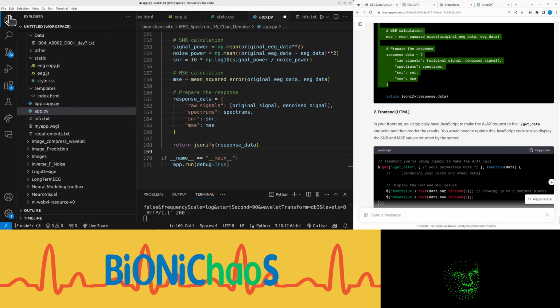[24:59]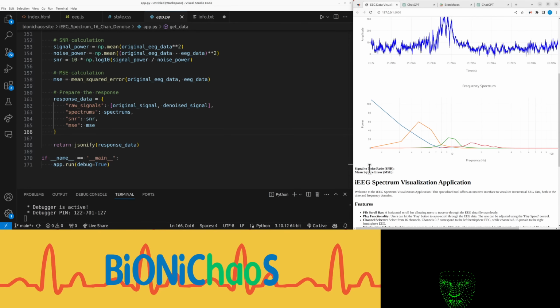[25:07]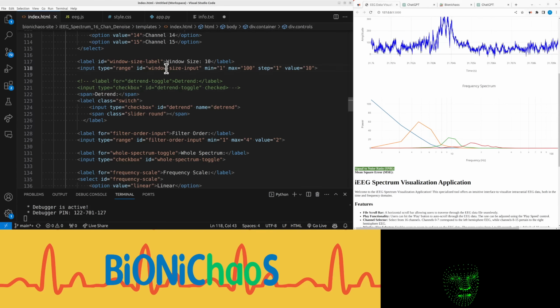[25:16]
So let's see if it actually works or not. We need also to change the front end. Well, in the front end, we already have the metric there. We need to make sure it's actually taking SNR, MSE. SNR, yes, MSE, yes. The capital. Wait. It's not called SNR output, is it?
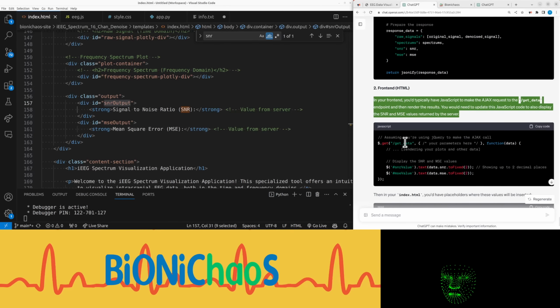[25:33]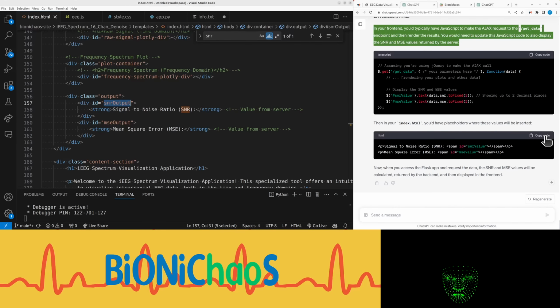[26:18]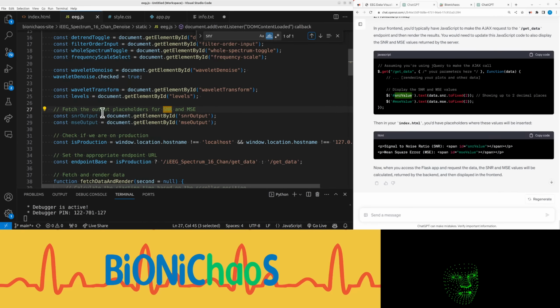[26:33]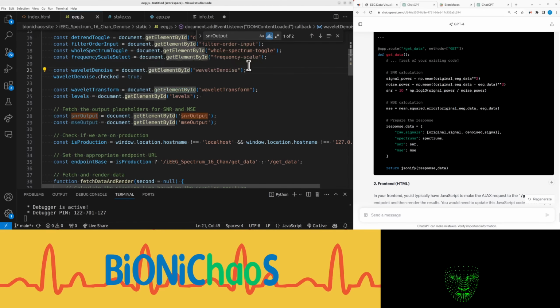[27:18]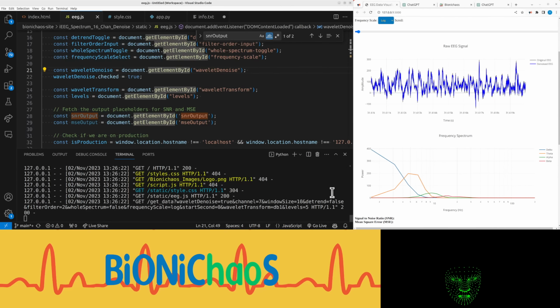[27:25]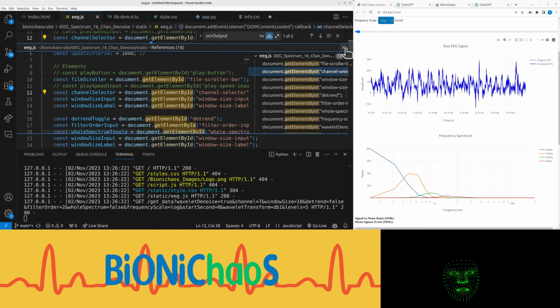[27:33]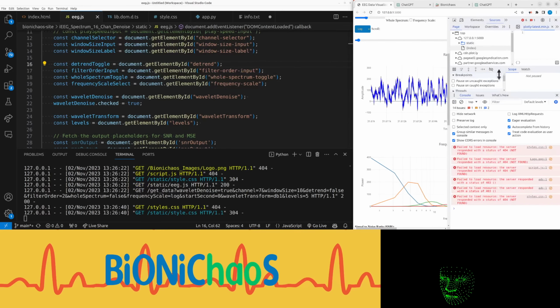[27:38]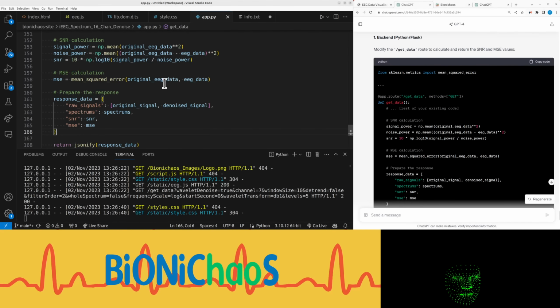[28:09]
Get element by ID. This will not work. Okay. Should be getting an error. Script not found, something not found. Yeah, it's not even showing the error. It's the name of this thing, isn't it? Okay, so in Python, it's called SNR response data, just the response data.
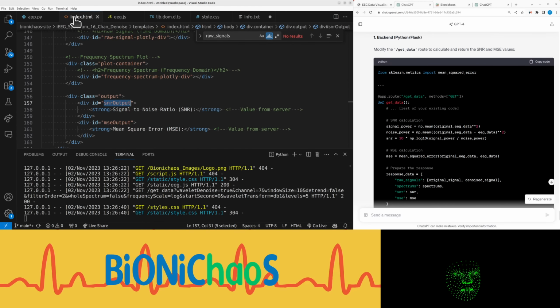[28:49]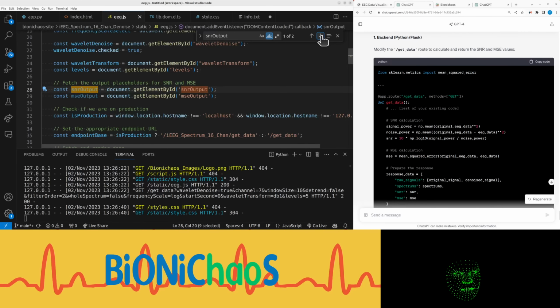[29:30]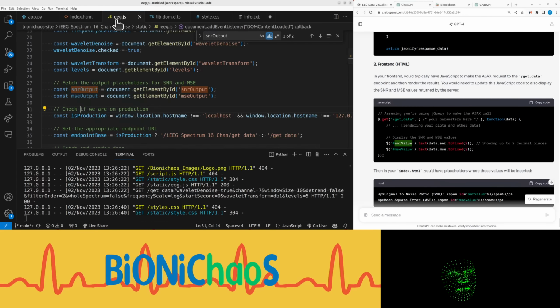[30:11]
Then where do we get the raw signals? Okay, so that should be just data raw signals. Spectrum should be the same, data spectrum. snrOutput is actually not being used. Okay, what am I doing wrong? Two decimal places.
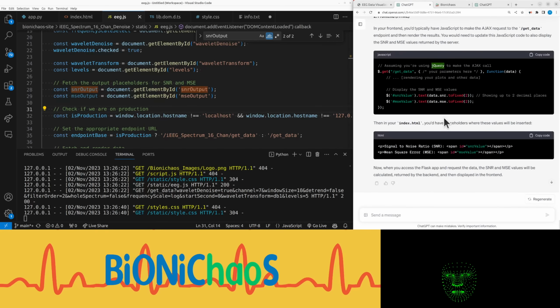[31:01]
Just assuming using. I'm not using jQuery. Why are you assuming I'm using jQuery? Using element by ID. Yes, that's right. You are correct. We're not using jQuery, just vanilla JavaScript.
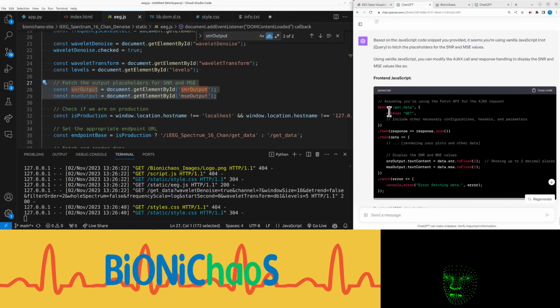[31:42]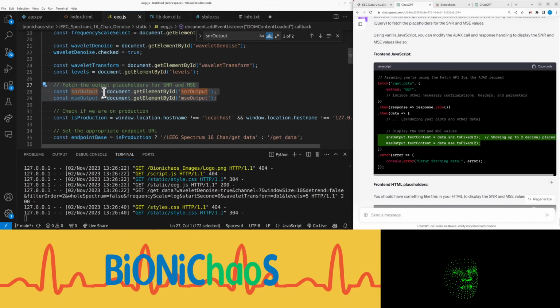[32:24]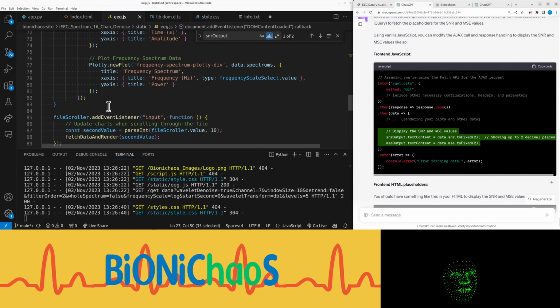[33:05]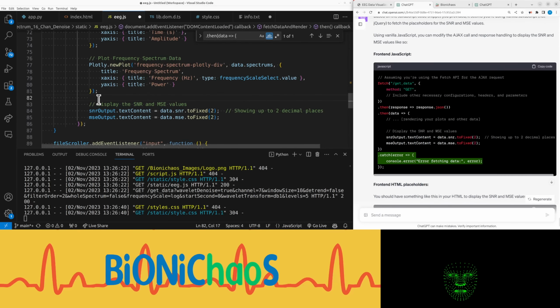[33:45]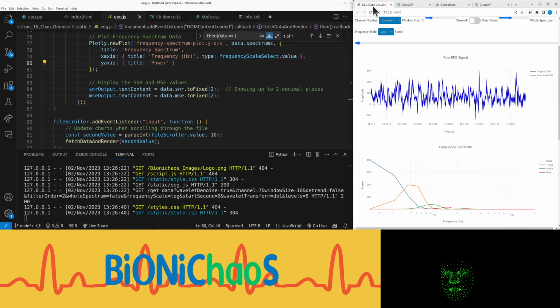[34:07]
Okay. Why do I need to do this anyway? It's inside. When that, I can catch what's happening after when data. Yeah, now I'm confused. It's showing me the values.
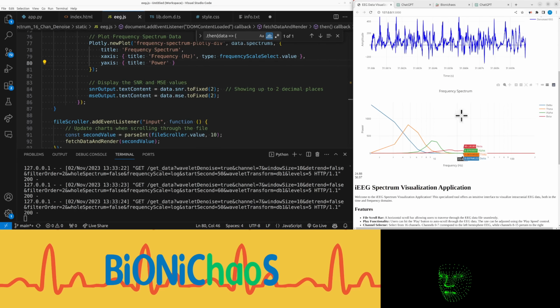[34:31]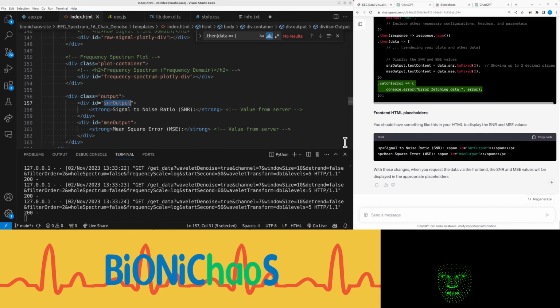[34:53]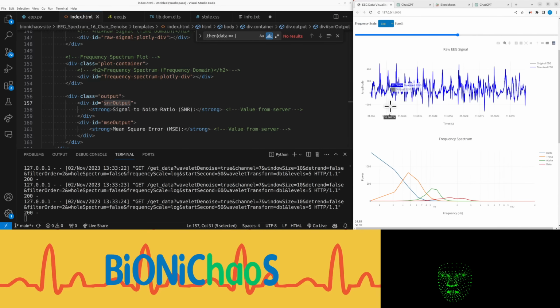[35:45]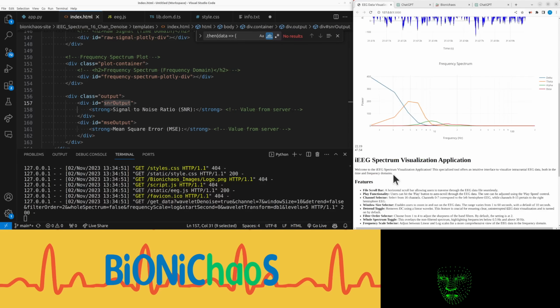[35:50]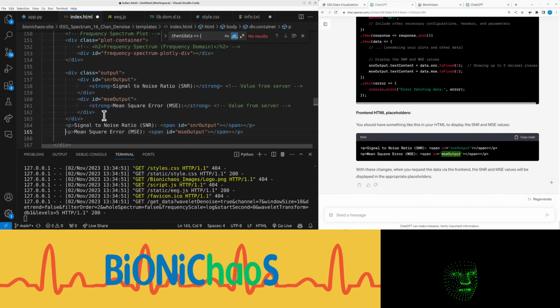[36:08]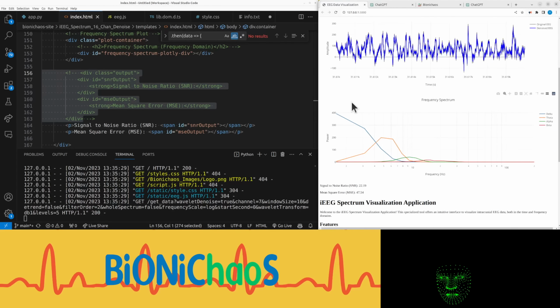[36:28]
Get HTML. Let's have an ID. Let me see, output, yeah, that's the same. Why am I not seeing the text? Let's get rid of that for a sec. Comment it all out. Right, we have the numbers.
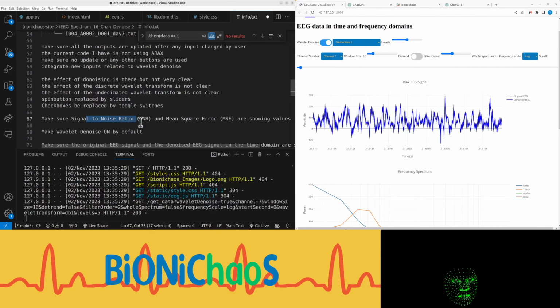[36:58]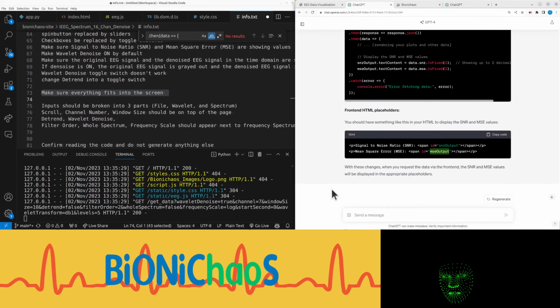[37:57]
Our main thing is how to make sure everything fits on the one screen. Wavelet Denoise is on by default. Yeah, that's the color bit. Yeah, we haven't broken the inputs into 3 parts yet. We did all this. Now, make sure it fits into the screen. Can you actually do it, or is it too much to ask?
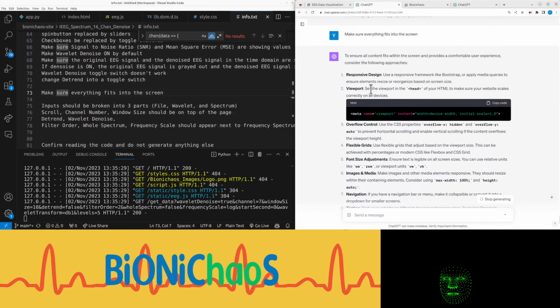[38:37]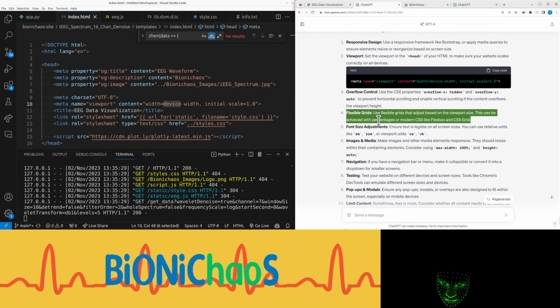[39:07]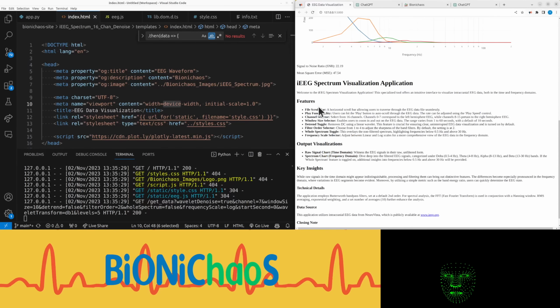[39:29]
To ensure all content fits within the screen and provides a comfortable user experience, consider the following approaches. Responsive design. Use a responsive framework like Bootstrap, or apply media queries to ensure elements resize or reorganize based on screen size. Viewport. Set the viewport in the head of your HTML to make sure your website scales correctly on all devices. Yes, I already have that. Overflow control. Use the CSS properties overflow-x hidden and overflow-y auto to prevent horizontal scrolling and enable vertical scrolling if the content overflows the viewport height. Flexible grids. Use flexible grids that adjust based on the viewport size. This can be achieved with percentages or modern CSS like Flexbox and CSS Grid. Font size adjustments. Ensure text is legible on all screen sizes. You can use relative units like em, rem, or viewport units vw, vh.
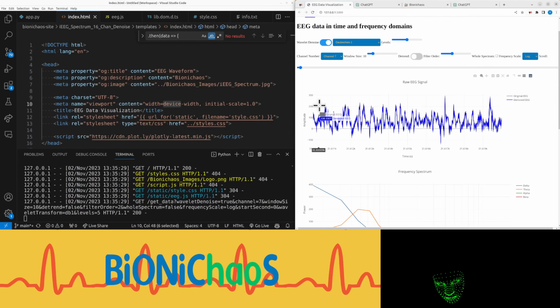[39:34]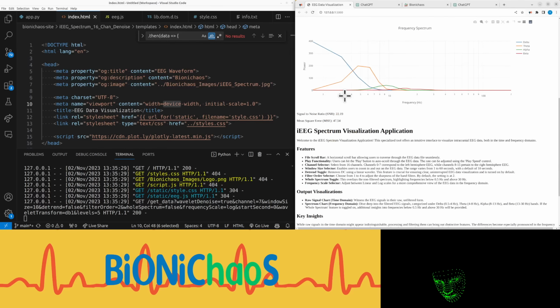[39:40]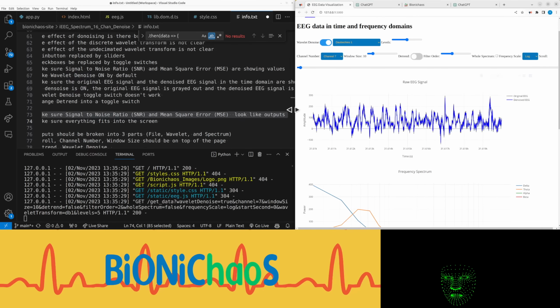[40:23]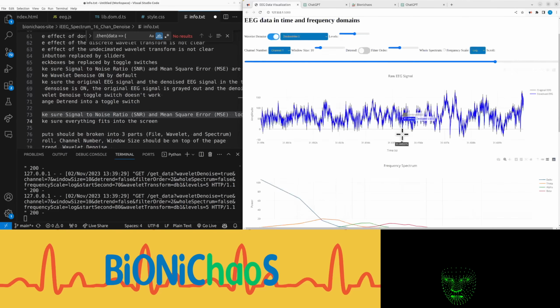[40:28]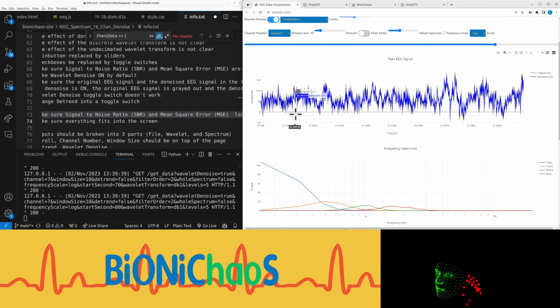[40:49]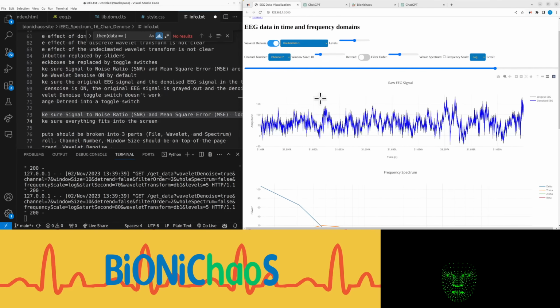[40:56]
Okay, the other thing. Make sure they look like outputs. Okay, I need it to give me specific suggestions. Yeah, I don't know what the regular screen size is, but still it doesn't fit. So it's okay for the text to be below, but everything else ideally will fit into one screen. And if it's not big enough, it should adjust the size of the charts. Can you do that?
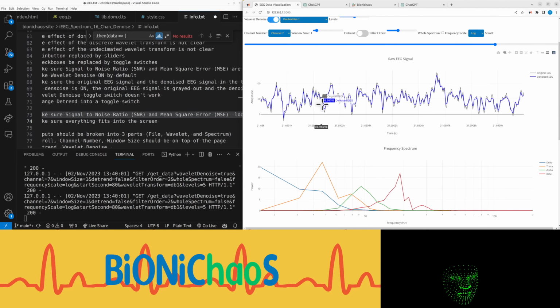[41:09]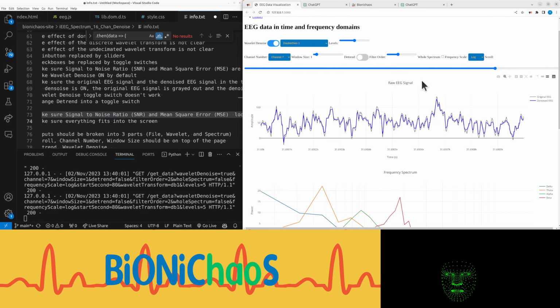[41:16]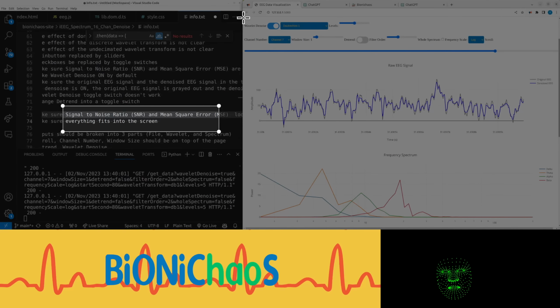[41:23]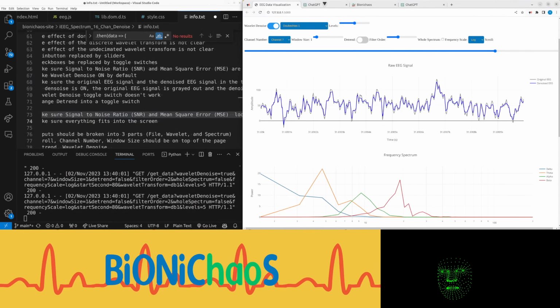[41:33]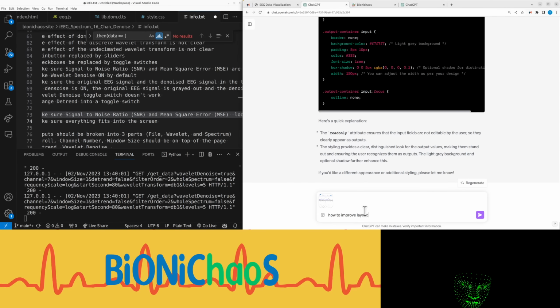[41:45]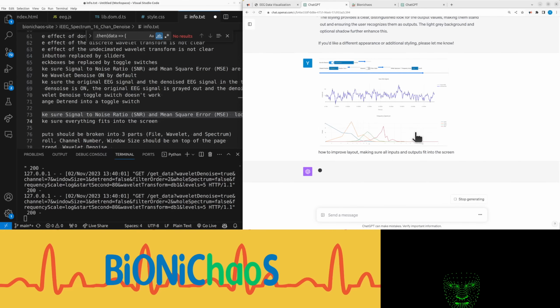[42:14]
It also can be displayed side by side. I think I tried this before, but let's do it again. Just grab the whole panel. Pop it into how to improve layout, making sure all inputs and outputs fit into the screen. Yeah, hopefully it understands that the text can be below.
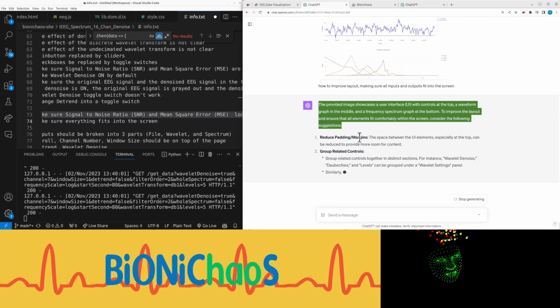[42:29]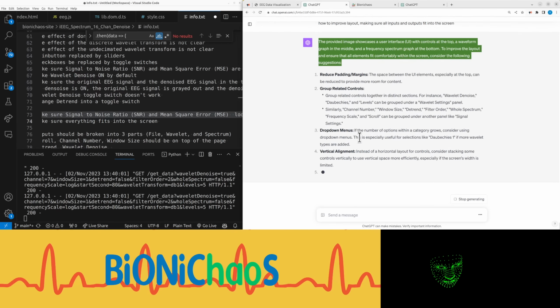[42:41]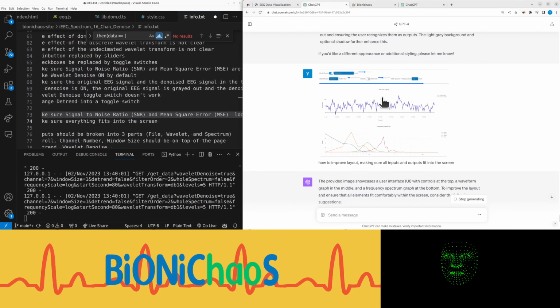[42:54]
The provided image showcases a user interface, UI, with controls at the top, a waveform graph in the middle, and a frequency spectrum graph at the bottom. To improve the layout and ensure that all elements fit comfortably within the screen, consider the following suggestions. Reduce padding and margins. The space between the UI elements, especially at the top, can be reduced to provide more room for content. No, I think that's okay. Group related controls together in distinct sections. For instance, wavelet denoise, Daubechies, and levels can be grouped under a wavelet settings panel.
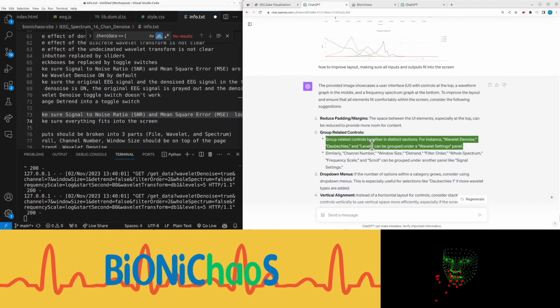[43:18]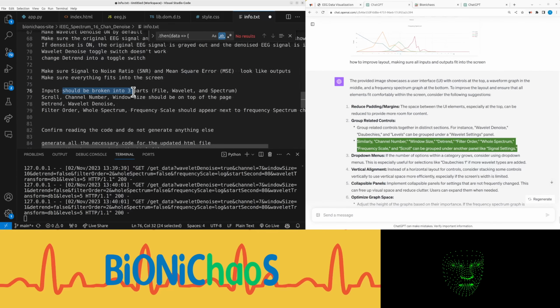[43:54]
And that's interesting, but that's only grouping the controls. Similarly, channel number, window size, detrend, filter order, whole spectrum, frequency scale, and scroll can be grouped under another panel like signal settings. We actually had a prompt for that. Yeah, it should be. Break the panel into 3 parts. File, wavelet. Yeah, to make that clearer.
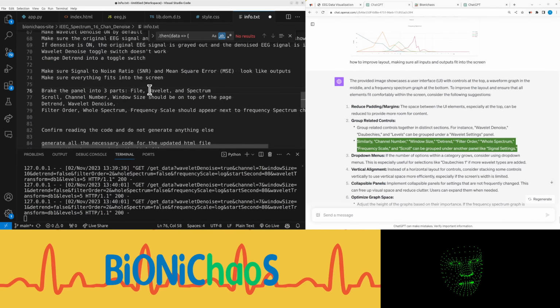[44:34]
Okay, let's go with this. Drop-down menus. If the number of options within a category grows, consider using drop-down menus. This is especially useful for selections like Daubechies 1 if more wavelet types are added. Yes, we're already doing that.
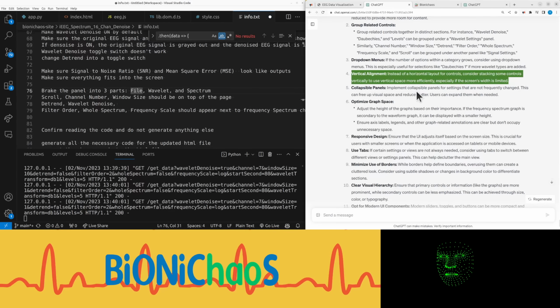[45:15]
Vertical alignment. Instead of a horizontal layout for controls, consider stacking some controls vertically to use vertical space more efficiently, especially if the screen's width is limited. Yeah, we generally want to have an adaptive layout. Use adaptive layout. Yeah, that's right.
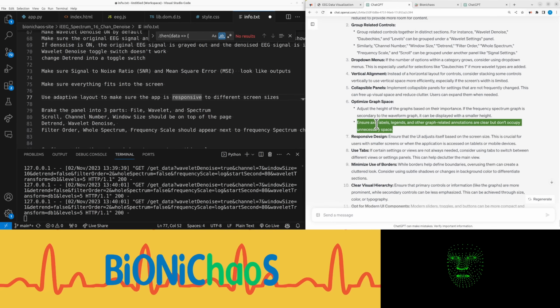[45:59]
Adjust the height of the graphs based on their importance. If the frequency spectrum graph is secondary to the waveform graph, it can be displayed with a smaller height. If the screen is wide enough, the EEG signal in the time domain and the frequency domain should be side by side. That's right. How did you know? I'm going to say that.
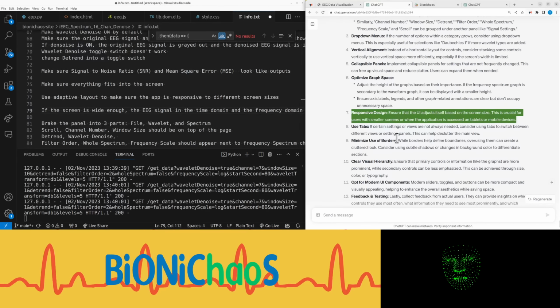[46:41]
Responsive design. Let's continue with this response from GPT-4. Responsive design. Ensure that the UI adjusts itself based on the screen size. This is crucial for users with smaller screens or when the application is accessed on tablets or mobile devices. I don't understand. Do I have to do it manually, or can I just tell it to make everything adaptive and that's it? Why do I need to check the size of the screen or device?
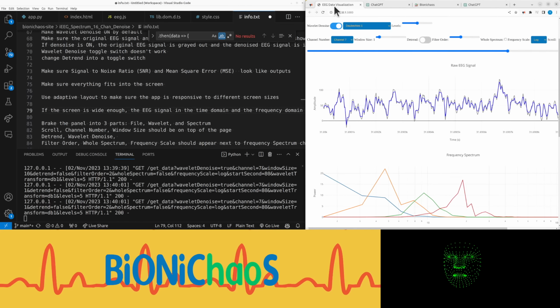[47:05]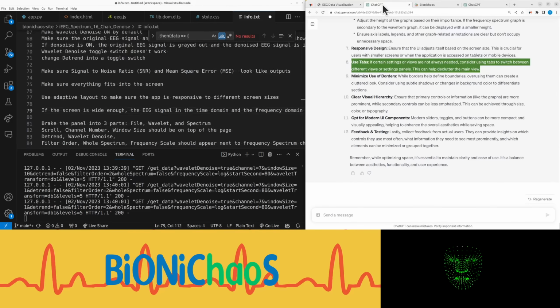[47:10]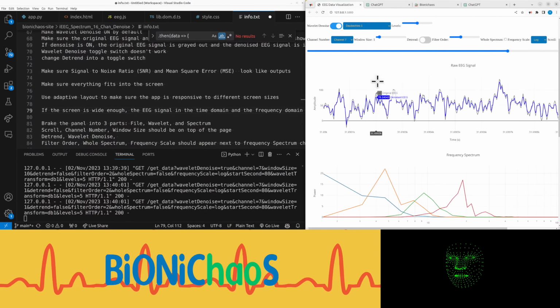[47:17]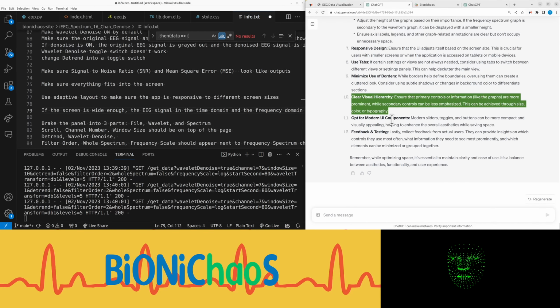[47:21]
Use tabs. If certain settings or views are not always needed, consider using tabs to switch between different views or settings panels. This can help declutter the main view. Yes, but also minimize use of borders. While borders help define boundaries, overusing them can create a cluttered look. Consider using subtle shadows or changes in background color to differentiate sections. Okay, now it starts giving some generic stuff. Ensure that primary controls or information, like the graphs, are more prominent, while secondary controls can be less emphasized. This can be achieved through size, color, or typography.
Opt for modern UI components. Modern sliders, toggles, and buttons can be more compact and visually appealing, helping to enhance the overall aesthetics while saving space. That could be an interesting one. This one is for you.
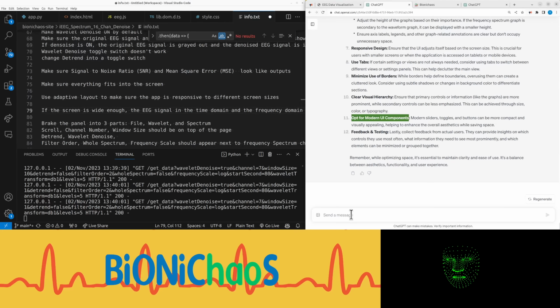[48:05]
Feedback and testing. Lastly, collect feedback from actual users. They can provide insights on which controls they use most often, what information they need to see most prominently, and which elements can be minimized or grouped together. Yeah, this is exactly where I need your help. Remember, while optimizing space, it's essential to maintain clarity and ease of use. It's a balance between aesthetics, functionality, and user experience.
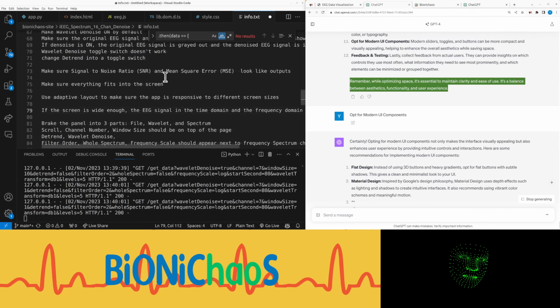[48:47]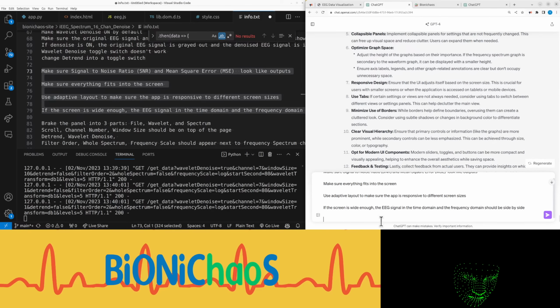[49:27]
Feels like it forgot the actual code, or is it not generating any code because I told it not to? Okay. Yeah, can we do all four specific code suggestions?
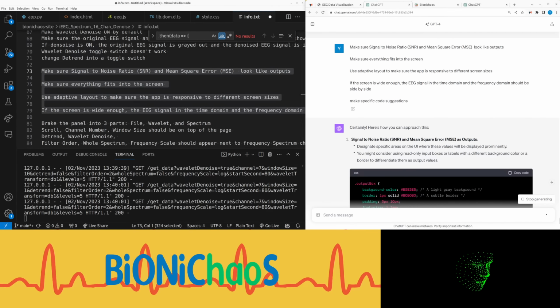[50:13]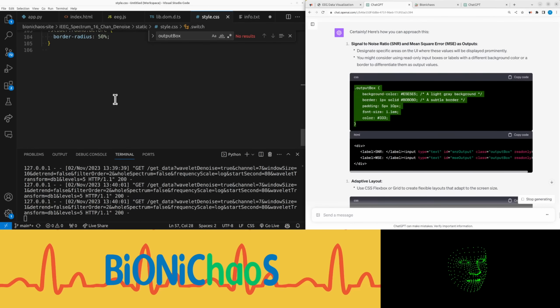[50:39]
Okay. Signal to noise ratio, SNR, and mean square error, MSE, at outputs, designate specific areas on the UI where these values will be displayed prominently. You might consider using read-only input boxes or labels with a different background color or a border to differentiate them as output values. Okay. Take that.
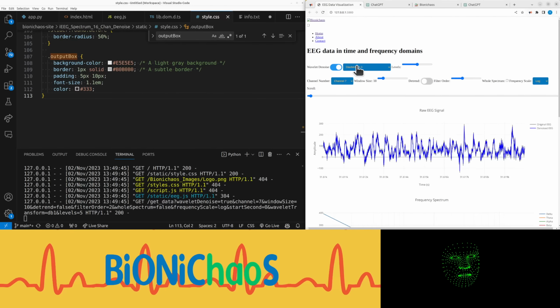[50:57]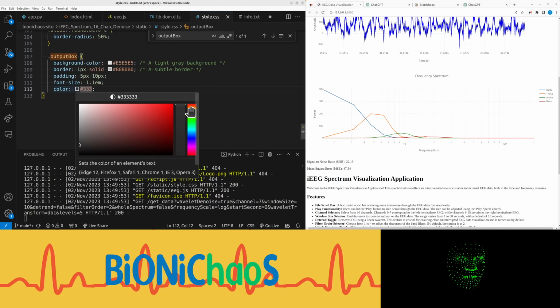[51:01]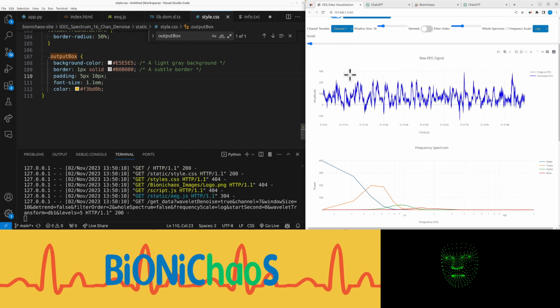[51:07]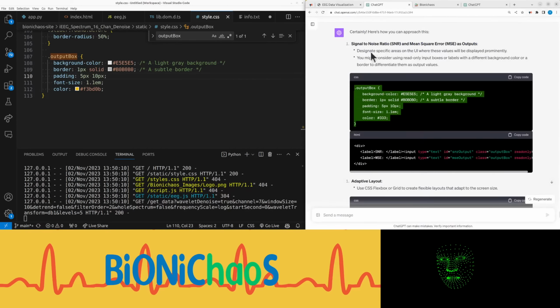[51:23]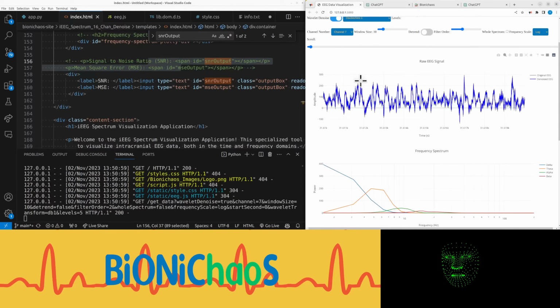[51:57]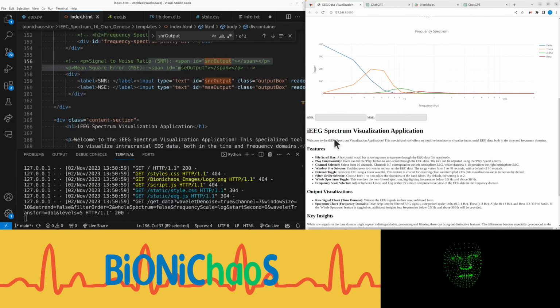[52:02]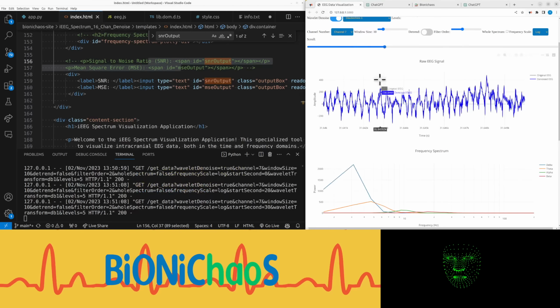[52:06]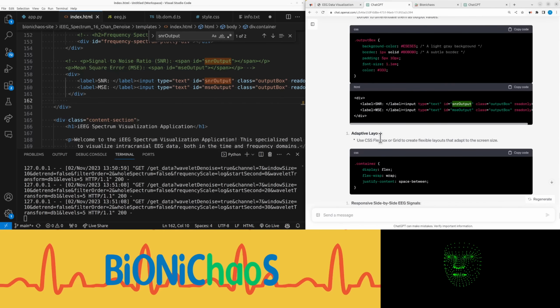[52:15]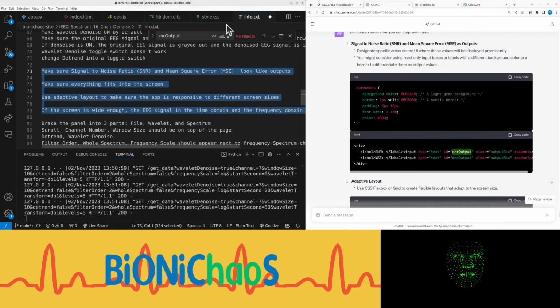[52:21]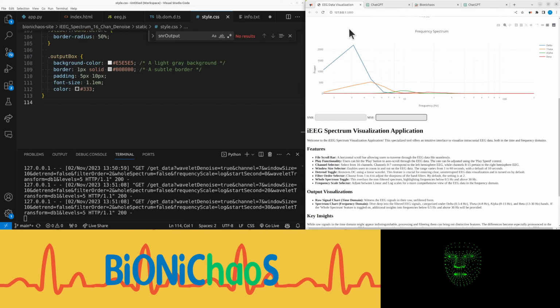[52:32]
And nothing has changed. Output box. I don't think I have an output box, do I? Yeah, I'll change the colors later. Alright, we don't see the difference because it's an output. Suggesting to do this instead. Okay, let's see the box. There are no values in it. What am I doing wrong?
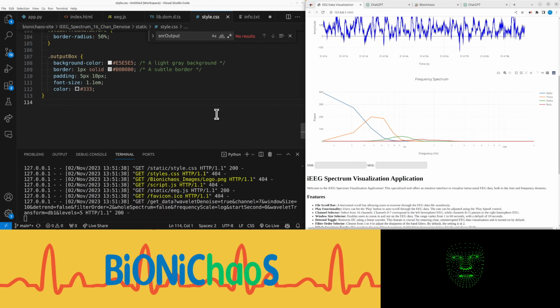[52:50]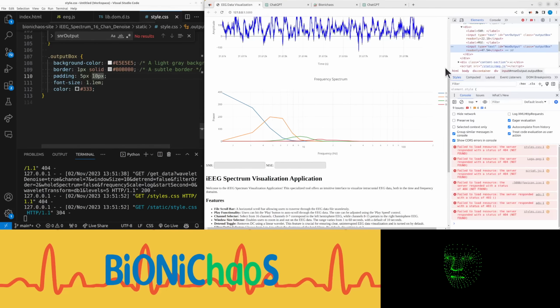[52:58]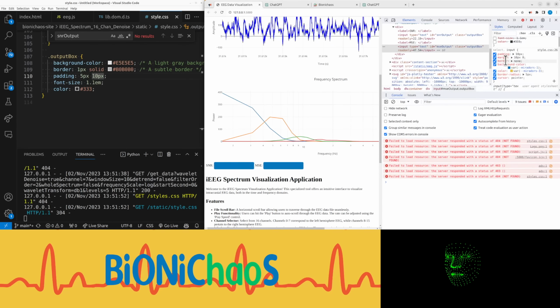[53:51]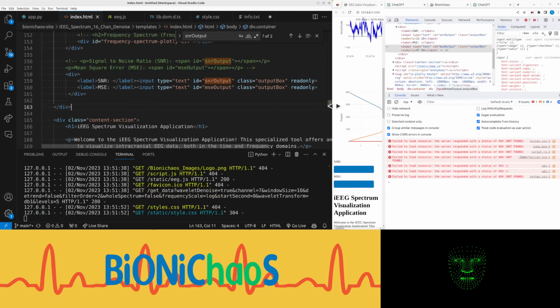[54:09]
Let's do F12 here, Control Shift C. Let's troubleshoot it straight from the browser. Okay, what is the text? Where is the text? Where's that color coming from? Okay, I don't know what's going on. I don't see the numbers. Let's check the HTML. Read only.
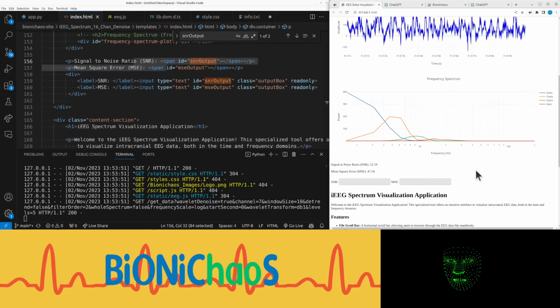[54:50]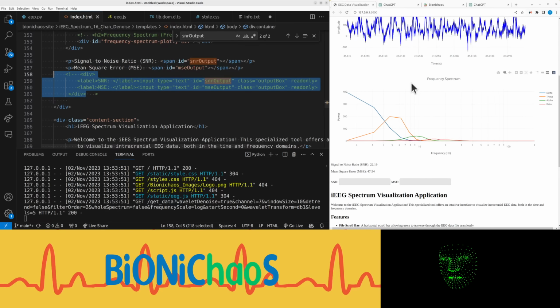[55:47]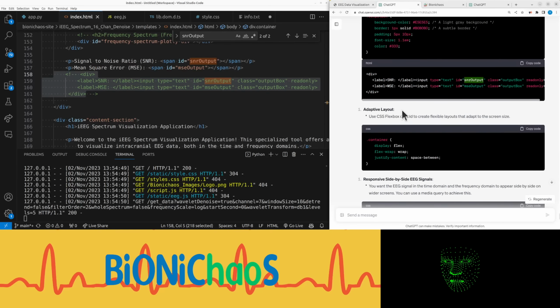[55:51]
This is okay, but the whole div can be an output box. It does look better, but unfortunately I do not see the numbers. Okay, adaptive, let's move on.
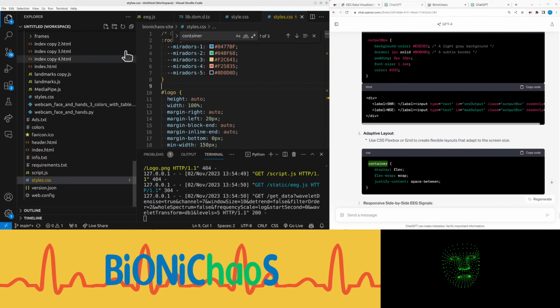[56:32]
Use CSS Flexbox or Grid to create flexible layouts that adapt to screen size. Right, so this container, it's CSS. And we already have it now. Now the whole question is, we have a secondary CSS. And this one does have a container display flex wrap. Yeah, so we can't really do it because we already have container features in the styling of the whole project, so we won't be changing it here.
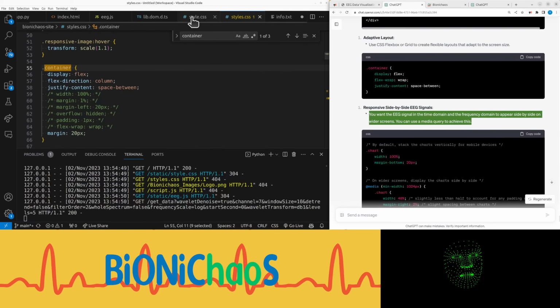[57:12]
You want the EEG signal in the time domain and the frequency domain to appear side by side on wider screens. You can use a media query to achieve this. Right, so by default, stack the charts vertically for mobile devices.
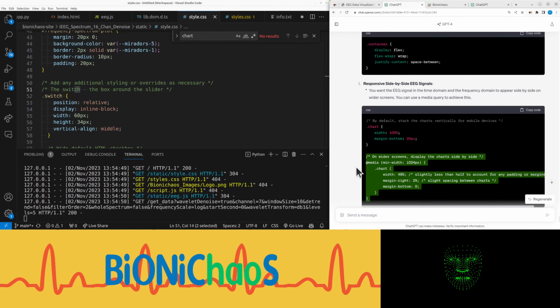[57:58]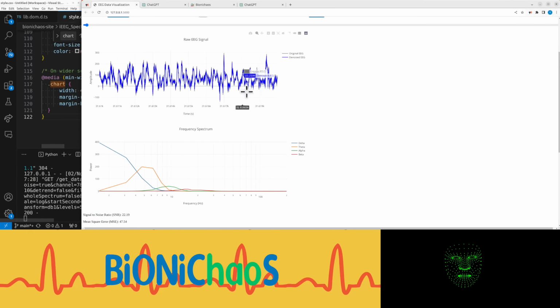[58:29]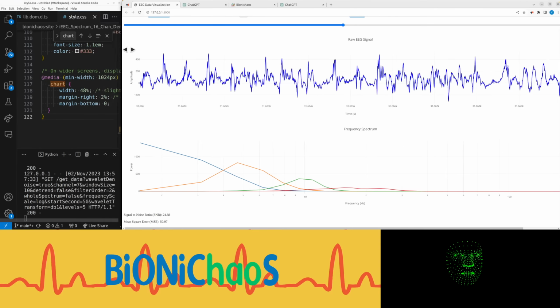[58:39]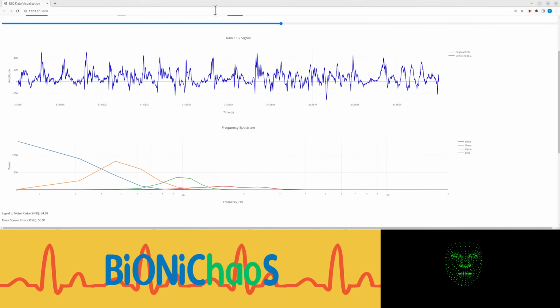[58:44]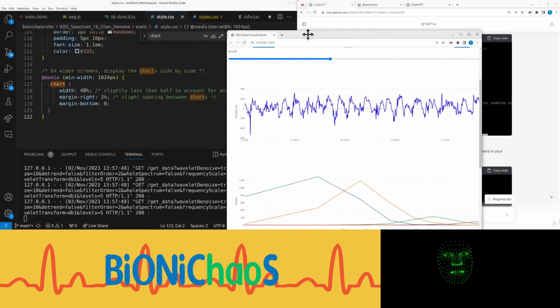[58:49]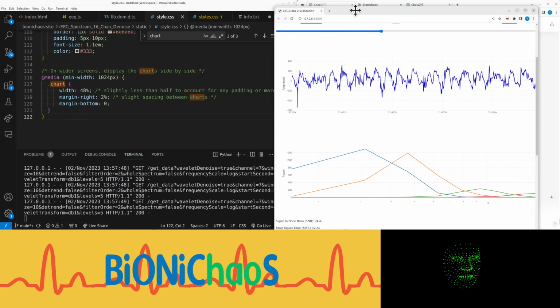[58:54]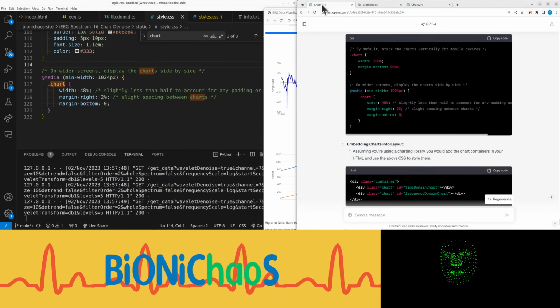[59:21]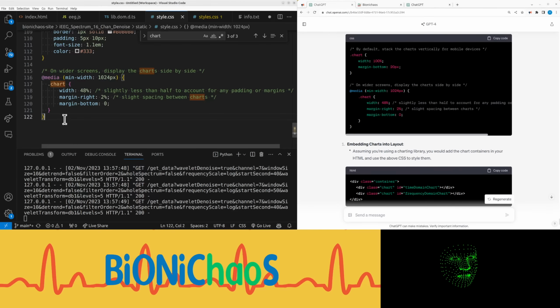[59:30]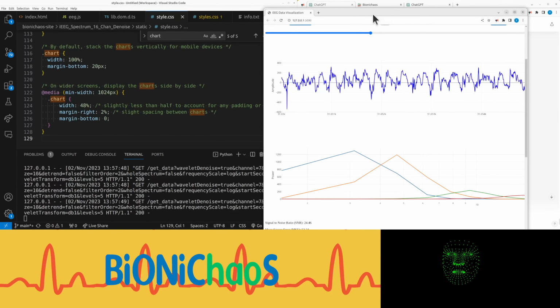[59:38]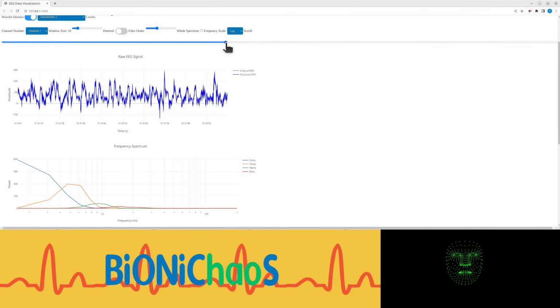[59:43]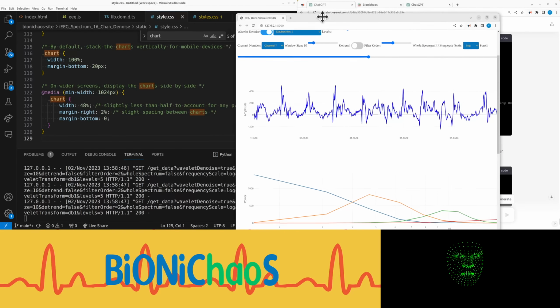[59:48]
Yeah, let's try it out. Oops. Come on. Right. This should definitely be wider. That didn't work. Oops, to do the whole... No, the chart is there. Okay, let's do the whole thing, just in case that's the problem. Okay, that doesn't work, obviously.
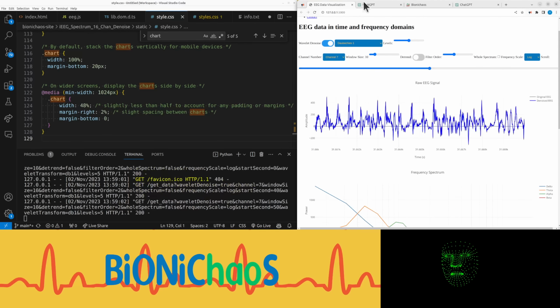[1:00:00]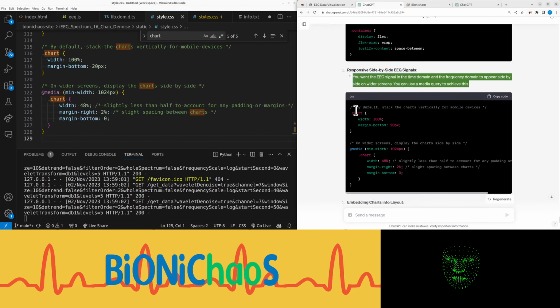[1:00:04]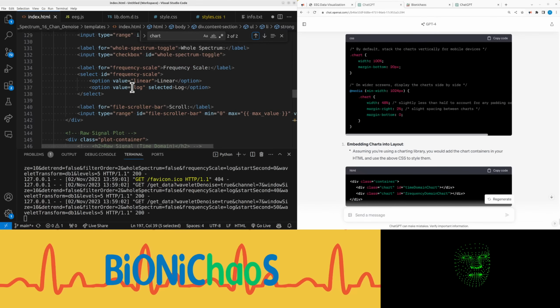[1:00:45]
What am I doing wrong? Do we even have the chart in HTML? No, we do not. A plot container. Right, because we need this. Assuming you're using a charting library, you would add the chart containers in your HTML and use the above CSS to style them.
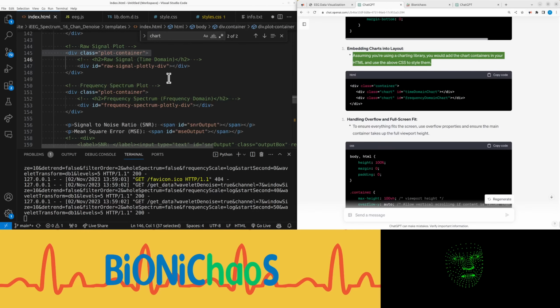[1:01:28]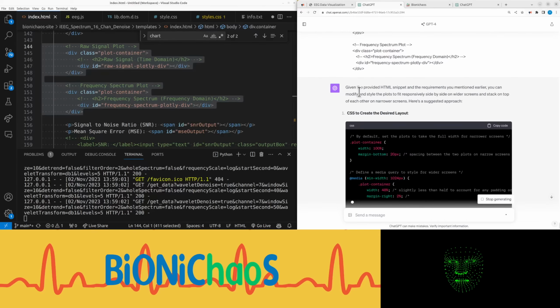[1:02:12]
Download chart. And no, that's not what I use. I use this. You should have all the previous code. I'm not sure why you're giving general responses. Given the provided HTML snippet and the requirements you mentioned earlier, you can modify and style the plots to fit responsively side by side on wider screens and stack on top of each other on narrow screens. Here's a suggested approach.
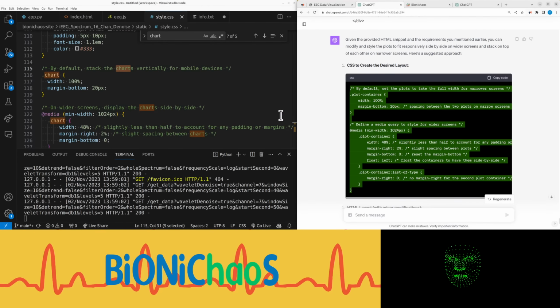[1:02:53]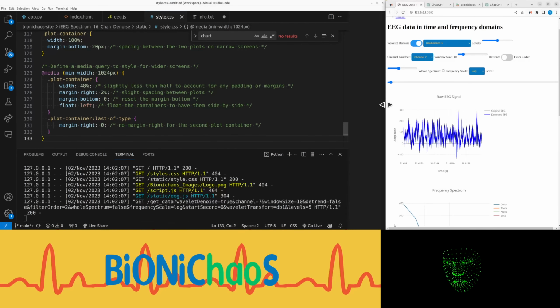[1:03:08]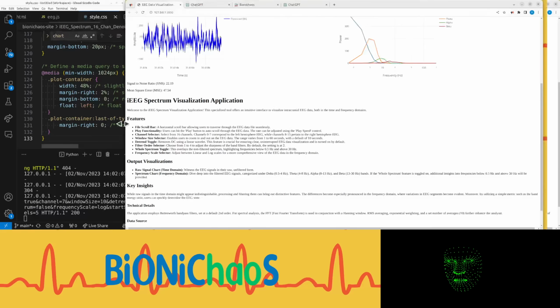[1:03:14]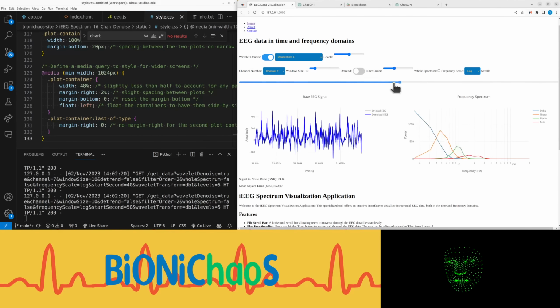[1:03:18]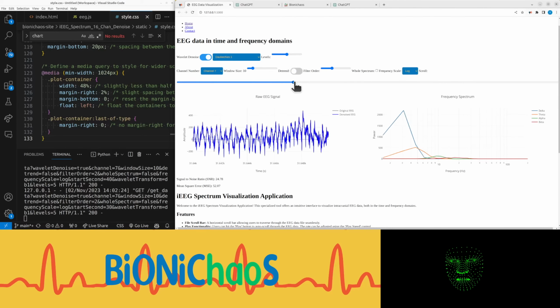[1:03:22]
Right, so instead of that, we're using plot container. By default, set the plots to take the full width for narrow screens. Define a media query to style for wider screens. Right. Pretty sure we're doing it instead of that. Okay. So in smaller screens, it will be like that. Larger screens will be plotted side by side, which is nice because we have everything fitting in nicely.
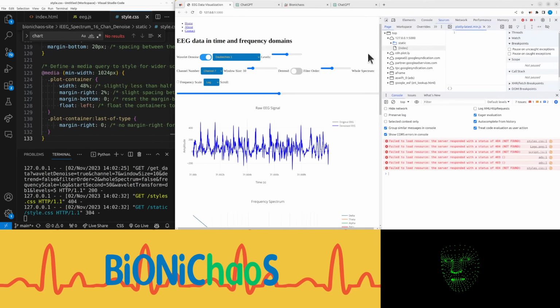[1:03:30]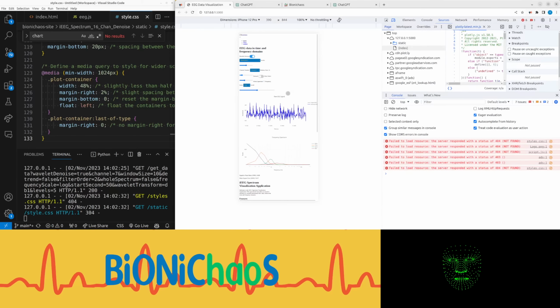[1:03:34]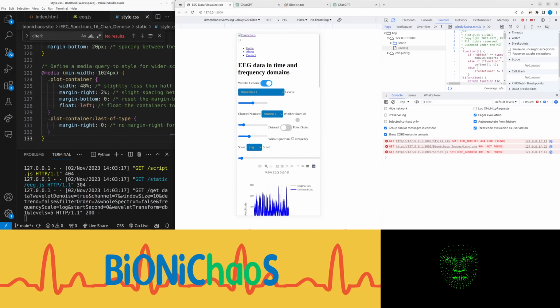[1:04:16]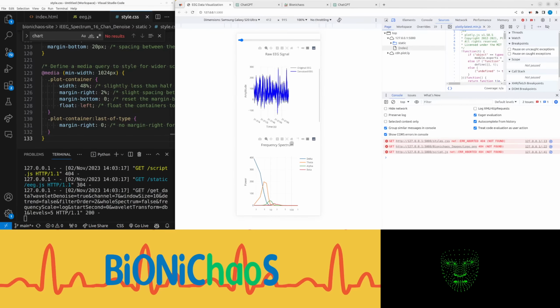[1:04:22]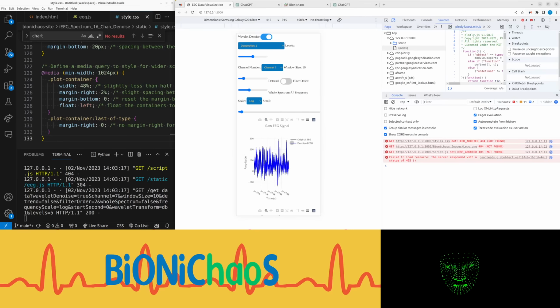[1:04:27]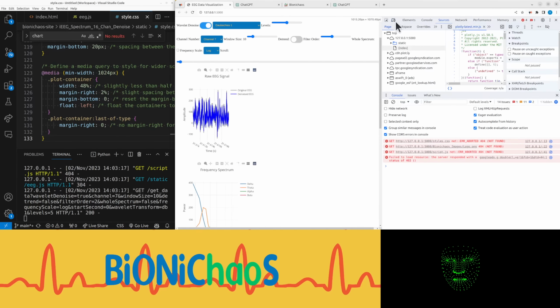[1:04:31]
Let's see how it looks on a mobile. What, iPhone 12 Pro? No, I don't have money for that, so we won't be testing on it. It says Samsung Galaxy. Not sure which size I have. I can just check on multiple ones. No, I'm just trying to make sure it's not a tablet or anything. But yes, oop. Okay, what just happened? Yeah, on mobile it doesn't fit really well.
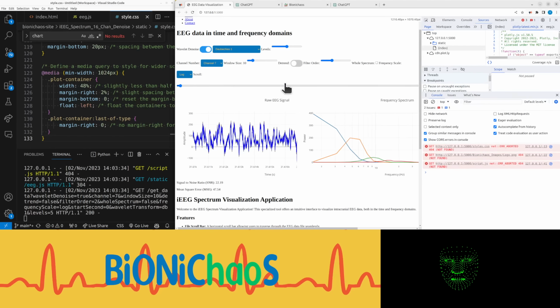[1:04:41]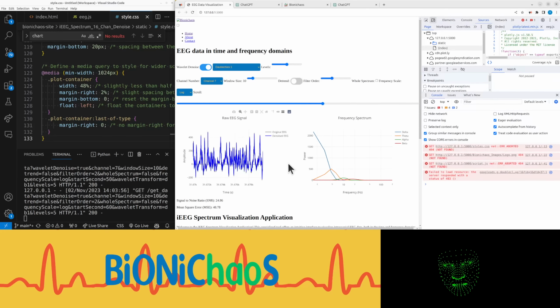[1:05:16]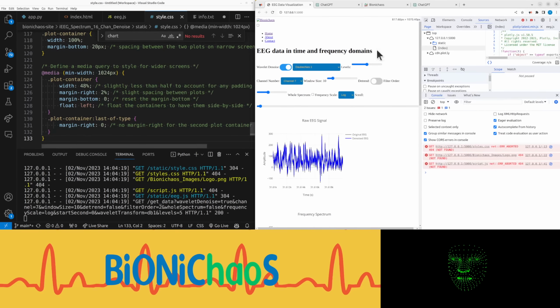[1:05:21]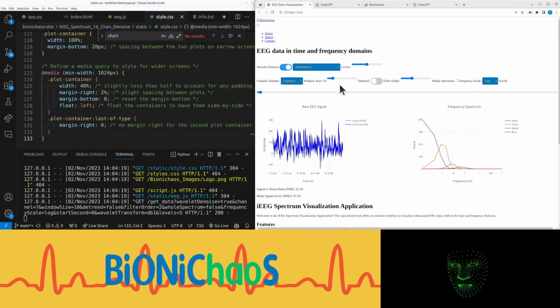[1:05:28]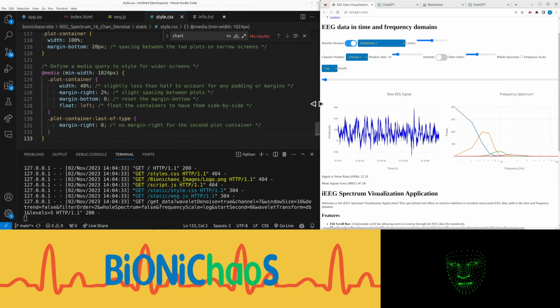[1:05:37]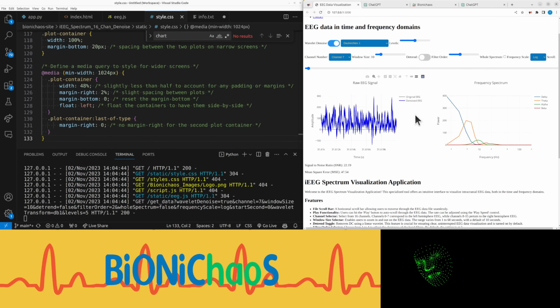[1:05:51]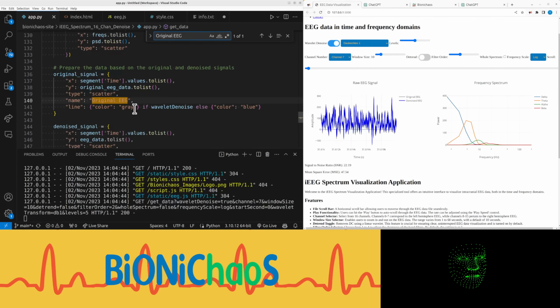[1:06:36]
On a larger screen it will appear like this, side by side, so it should fit the entire screen. Yeah, this takes too much space, doesn't it? Let's restart. Right, so it does look much better. The errors we're having, no, they will be sorted in production. Yeah, the problem is with the smaller screen. I don't like that it takes too much space. You can remove the "EEG" here, just so it takes a bit less space.
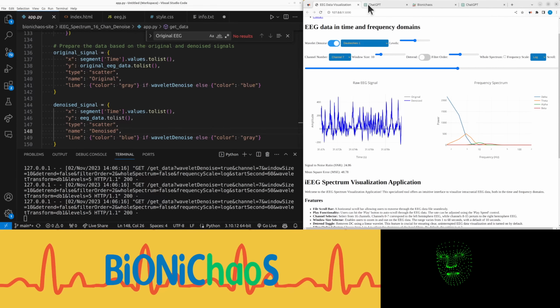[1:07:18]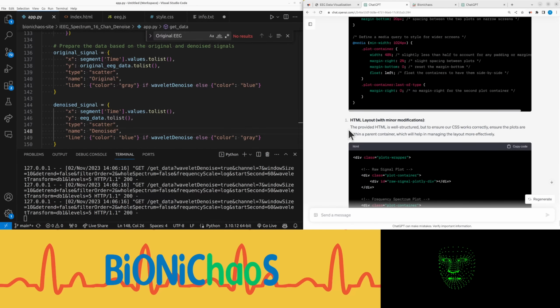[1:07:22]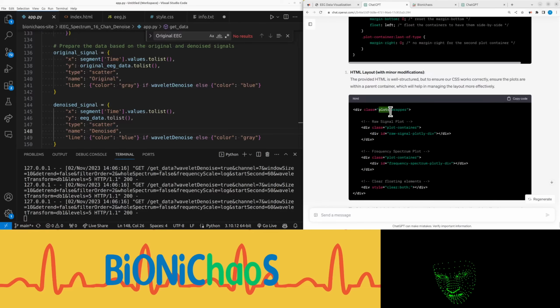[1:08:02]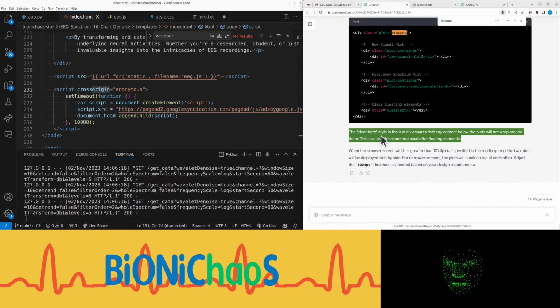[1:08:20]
Yeah, those still don't really look like outputs. The provided HTML is well structured, but to ensure our CSS works correctly, ensure the plots are within a parent container, which will help in managing the layout more effectively. Okay, do I have this already? In an HTML wrapper, no. It's not being used, so why do I need it? The clear: both style in the last div ensures that any content below the plots will not wrap around them. This is a traditional method used after floating elements. I don't know what that means, but I can try it out.
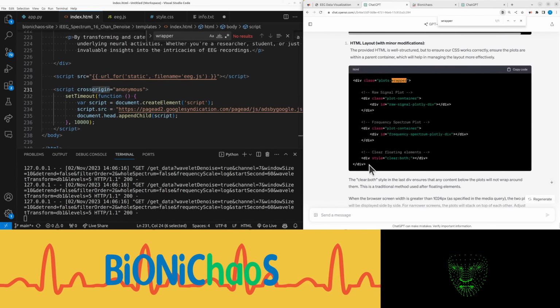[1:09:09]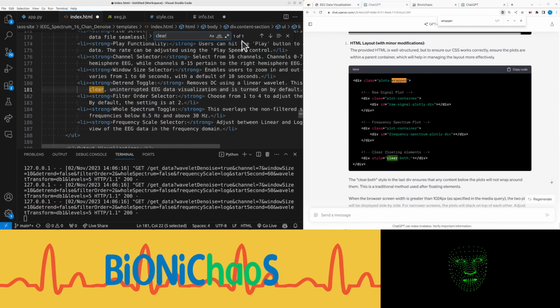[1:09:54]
When the browser screen width is greater than 1024px, as specified in the media query, the two plots will be displayed side by side. For narrow screens, the plots will stack on top of each other. Adjust the 1024px threshold as needed based on your design requirements. Okay, if you say so, I'll keep that number, because I don't have any better ideas. But what's up with... So we do have a plot container. Yeah, we don't have those titles. Have an ID. So that's the same. Don't have any clearing anywhere, do we? No.
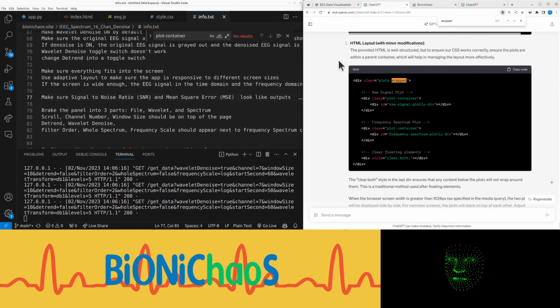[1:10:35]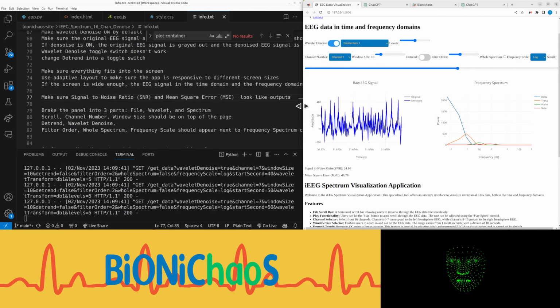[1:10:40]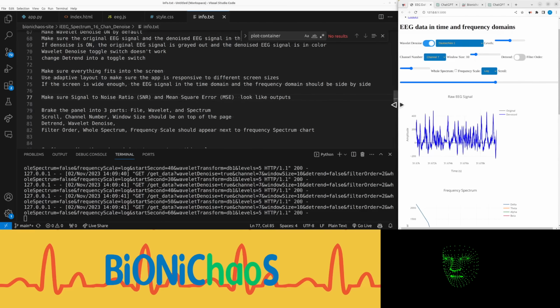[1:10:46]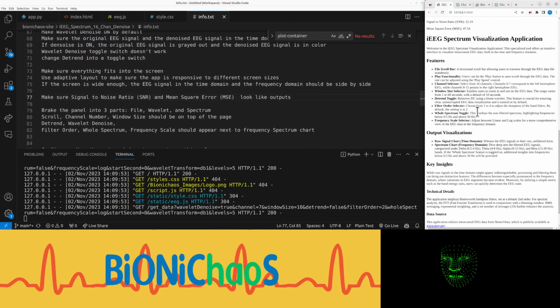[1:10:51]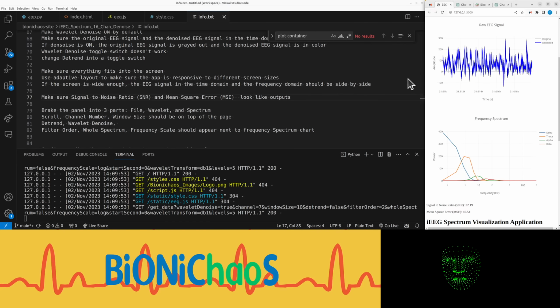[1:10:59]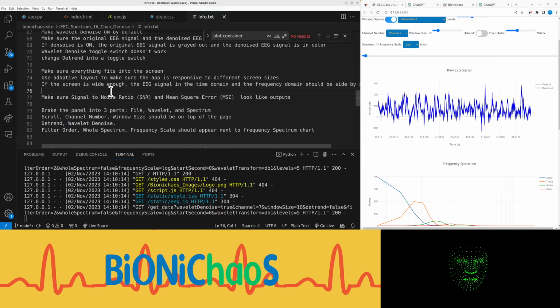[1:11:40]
Okay, so we have those two plot containers. Can replace the whole thing. This, let's save that as well. Yeah, this one's still not working. So yes, there's always more room for improvement. Let's assume the window size is not changing. I don't know what to do on a smaller window size, it just doesn't fit. Yes, something will have to go. Labels could go. Yeah, that will be hard. Leave it for now.
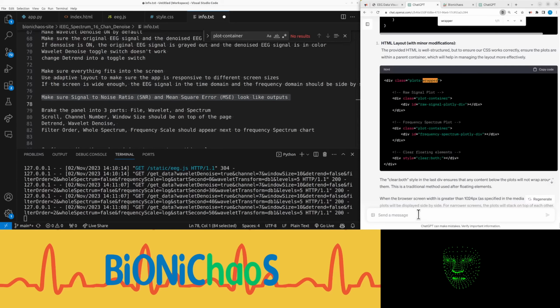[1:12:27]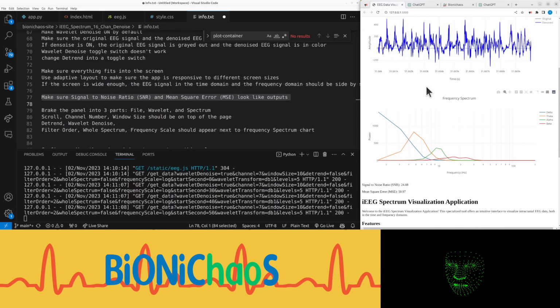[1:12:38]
It's working okay. Just the last thing, those things still. Let's try this again. Hopefully it doesn't get upset with me because I'm asking the same thing over and over again. I'm trying to get those two outputs to actually look like outputs. Let's see. Yeah, so they change, okay.
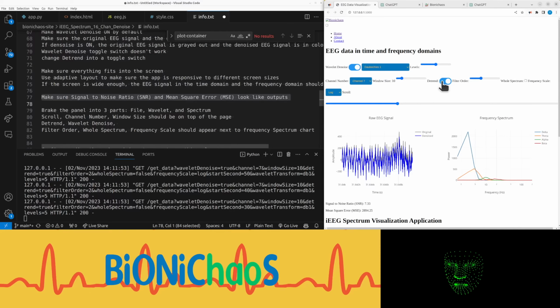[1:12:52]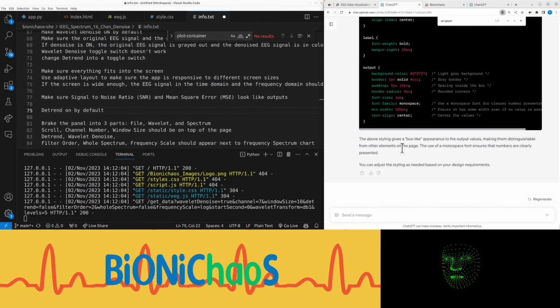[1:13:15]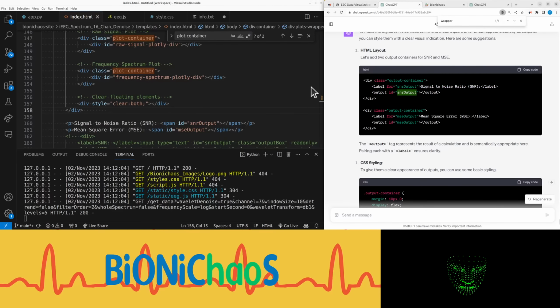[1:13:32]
Wait, the detrending should be on by default. Detrend on by default. Let's fix the previous thing. Yeah, I want those two outputs to actually look like outputs. HTML, adjust, two outputs is now, blah blah. And CSS, let's check. Yes, and right, so they just look like that.
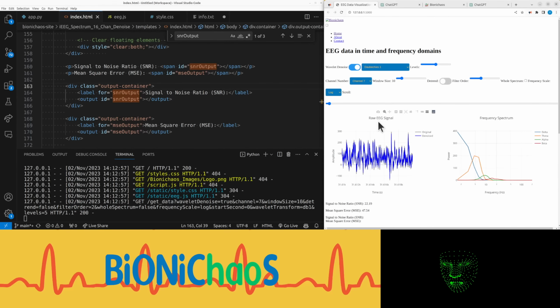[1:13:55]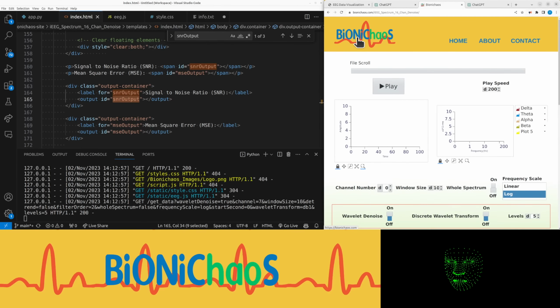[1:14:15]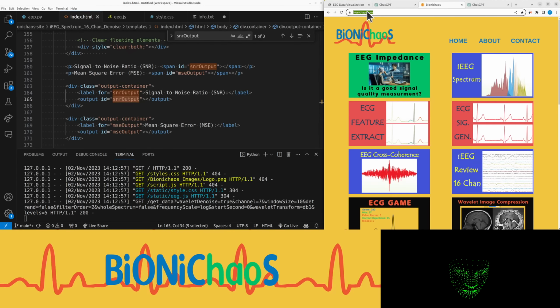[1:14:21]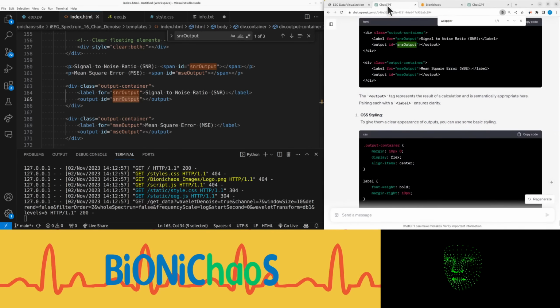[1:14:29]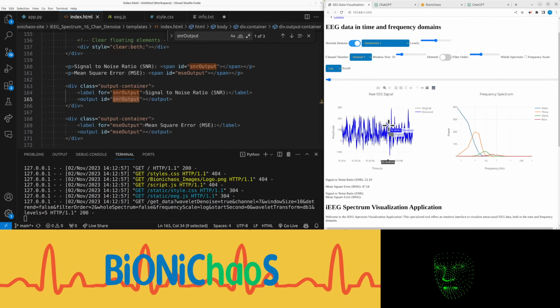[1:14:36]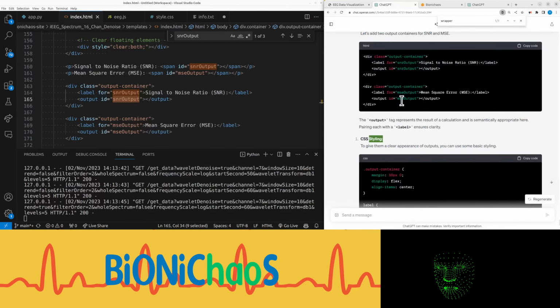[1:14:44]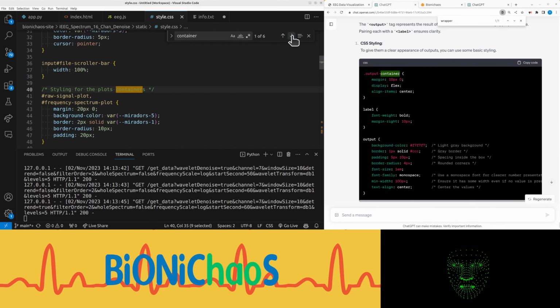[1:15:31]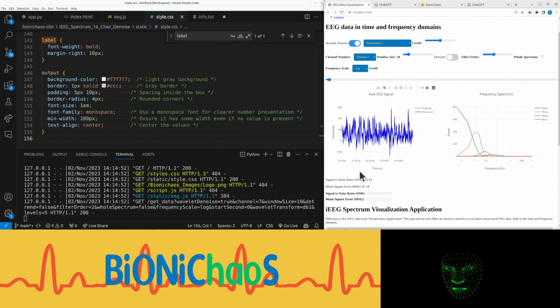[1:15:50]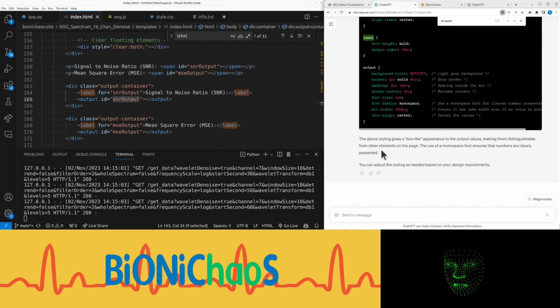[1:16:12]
Have to change the output container. No, oops, can't even copy paste properly. I have a plot container. Yeah, we don't have it. Label, no. Output, no. Main problem is that this SNR is not showing any values. That's the old one. Yeah, the new one looks more like an output. Then where are the values? They're just not there.
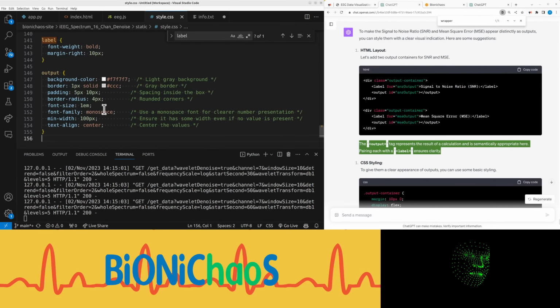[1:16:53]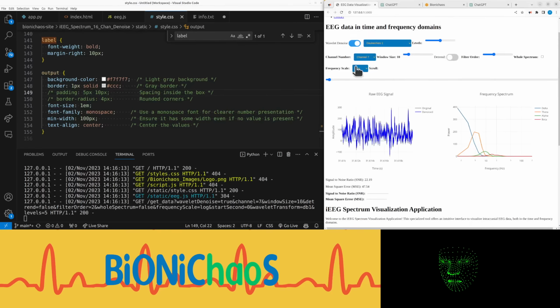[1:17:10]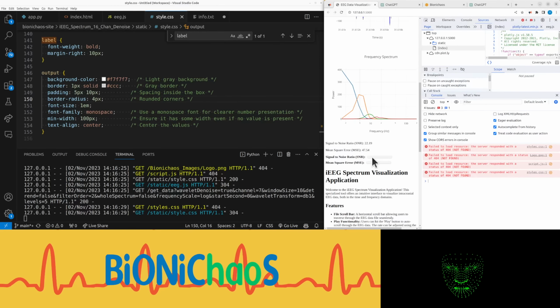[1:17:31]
What's that says? The output tag represents the result of a calculation and is semantically appropriate here. Pairing each with a label ensures clarity. What? Span ID. So I have the text, output ID. It's not being shown. Yeah, don't like all this fluff. Yeah, okay, maybe I did it. Get it. Where are the numbers?
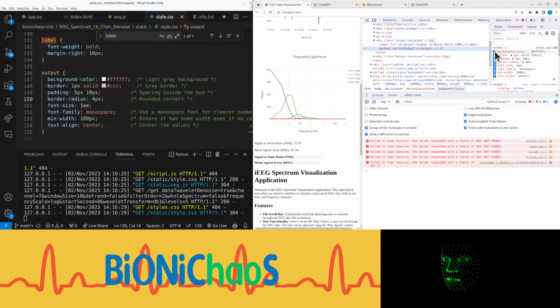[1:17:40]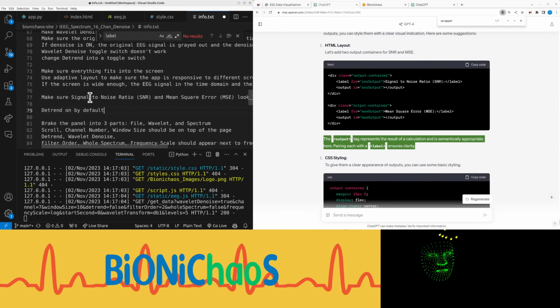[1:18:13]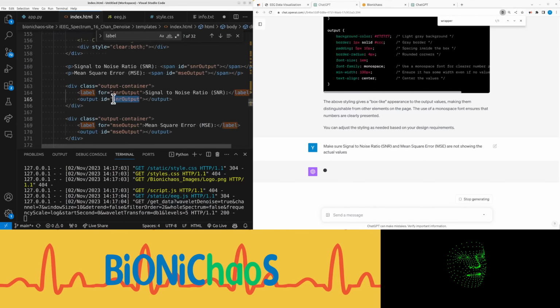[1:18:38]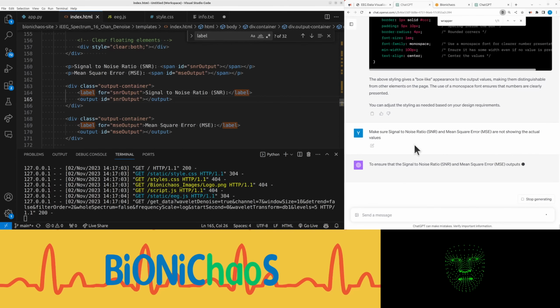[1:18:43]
These two are not showing the actual values. What? The values are there. What's going on?
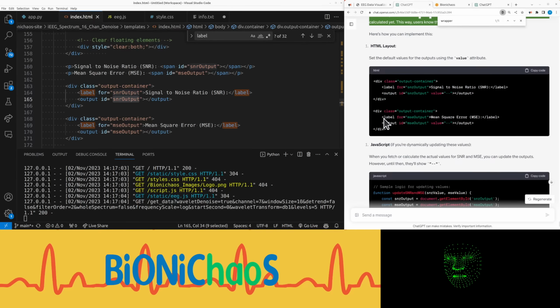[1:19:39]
To ensure that the signal-to-noise ratio, SNR, and mean square error, MSE, outputs do not show their actual values by default, or until a particular action is performed, you can set the default values to a placeholder or any other string indicating that the value is not available or not calculated yet. This way, users know the values are pending or not available. The values are there. Not sure what the problem is.
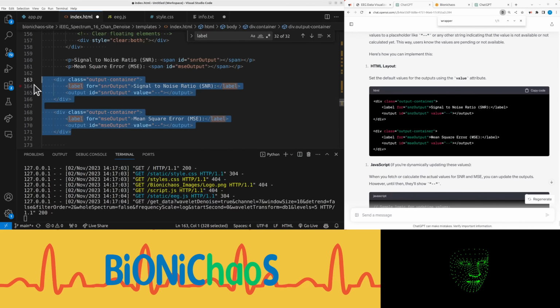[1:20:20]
When you fetch or calculate the actual values for SNR and MSE, you can update the outputs. However, until then, they'll show. Until the updateSNR function is called with actual values, the outputs will continue to display. This ensures that the placeholders are shown until you're ready to display the real values. Yeah, I'm happy to do that, but that's not gonna solve the problem.
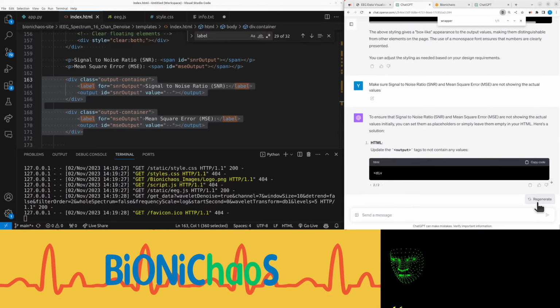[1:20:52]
No, like literally the numbers. Okay, can you regenerate it? Don't like this response. Why would you do that? Why would I do that? What did I say? Ah, made a mistake. Make sure showing the actual values. Sorry for that.
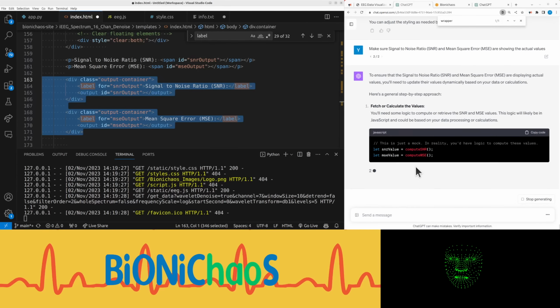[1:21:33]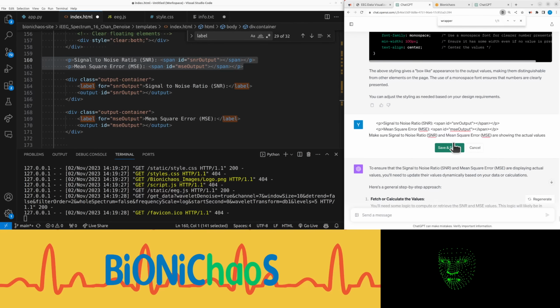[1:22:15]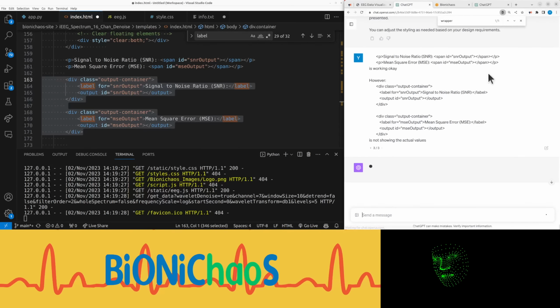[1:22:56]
Yeah, no, the values. Let's try again. So this one is working, okay. However, this one is not showing the actual values. Ooh, get bogged down in these little things.
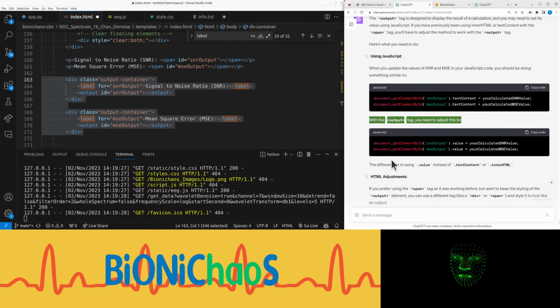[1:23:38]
The output tag is designed to display the result of a calculation, and you may need to set its value using JavaScript. If you have previously been using innerHTML or textContent with a span tag, you'll have to adjust the method to work with the output tag. When you update the values of SNR and MSE in your JavaScript code, you should be doing something similar to this. With the output tag, you need to adjust this to that. The difference is in using value instead of textContent or innerHTML. Okay, so just output. Okay, getElementById.
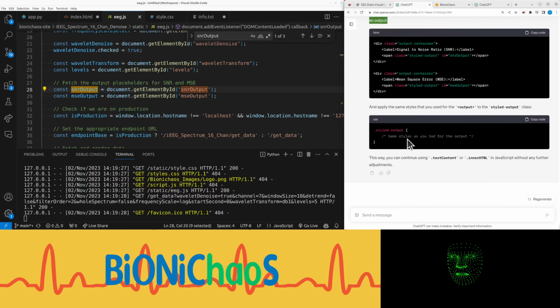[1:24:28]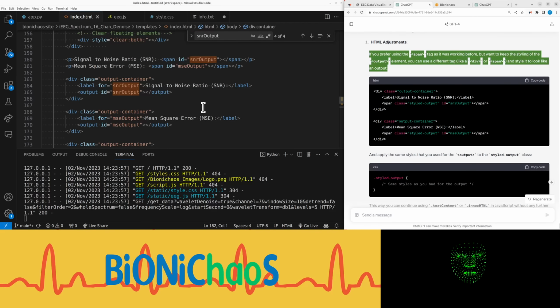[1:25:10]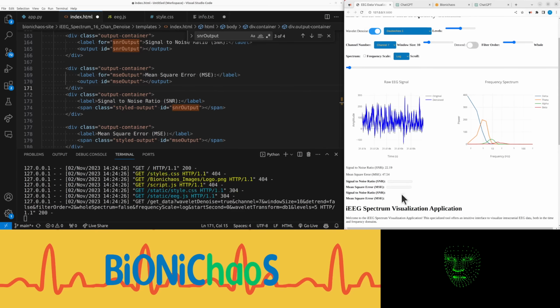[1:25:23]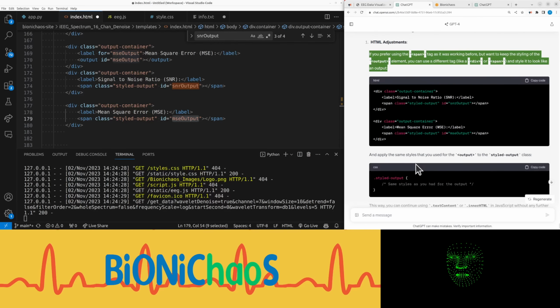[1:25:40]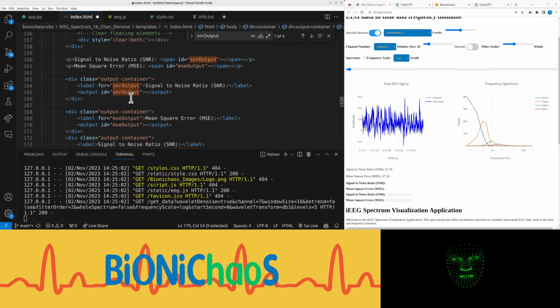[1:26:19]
If you prefer using the span tag as it was working before, but want to keep the styling of the output element, you can use a different tag, like a div or span, and style it to look like an output. Okay, so will this work? And no, does not. Styled output. It's still not showing the value. Same thing.
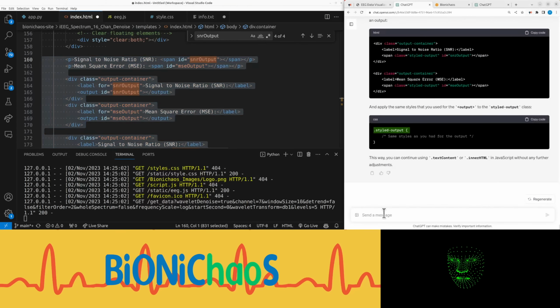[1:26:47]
Works okay. This one doesn't work. Doesn't work as well.
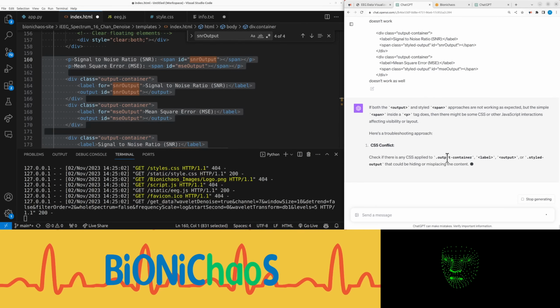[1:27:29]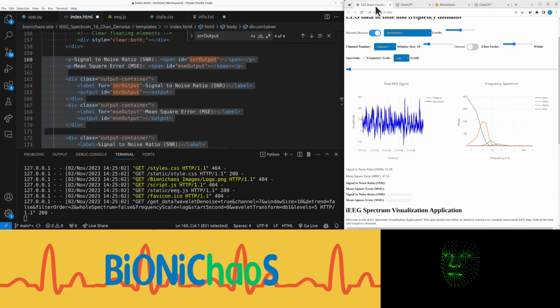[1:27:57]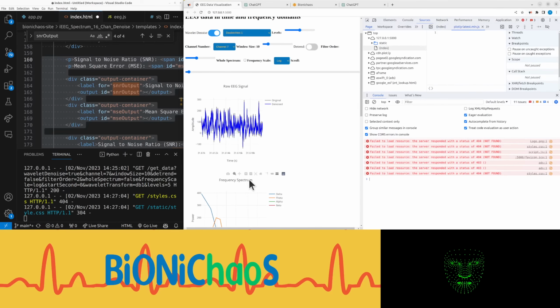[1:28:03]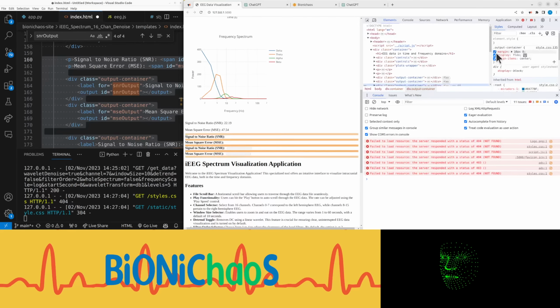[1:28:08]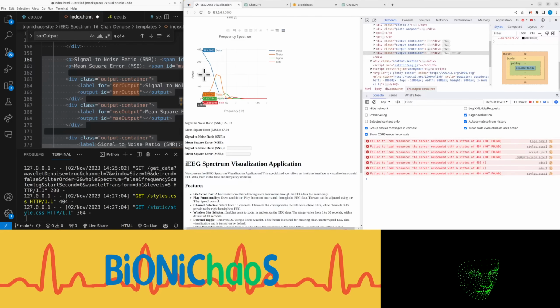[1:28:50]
Troubleshooting. Check if there is any CSS applied to output container, label, output, or styled output that could be hiding or misplacing the content. You can do this using browser developer tools, e.g., inspect element in Chrome. And no, there's nothing affecting this thing. Oh, come on.
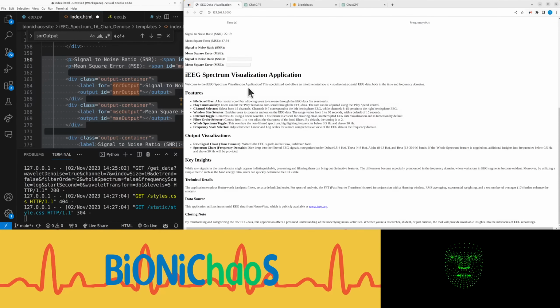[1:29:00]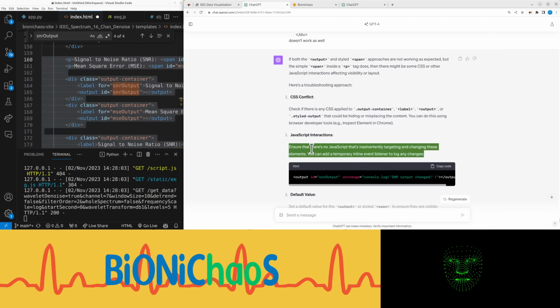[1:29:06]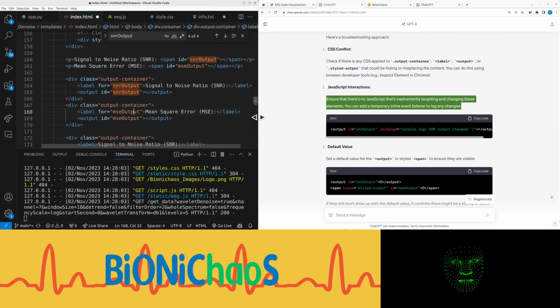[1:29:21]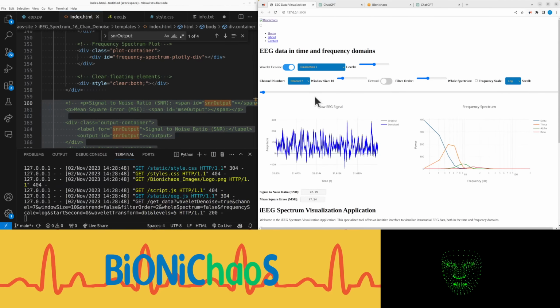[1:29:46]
Ensure that there's no JavaScript that's inadvertently targeting and changing these elements. You can add a temporary inline event listener to log any changes. Be sure it's not changing. The save span. Styled output. Comment all that out. Right. So maybe it was changing or something. Oh, yeah. Just get rid of all of that.
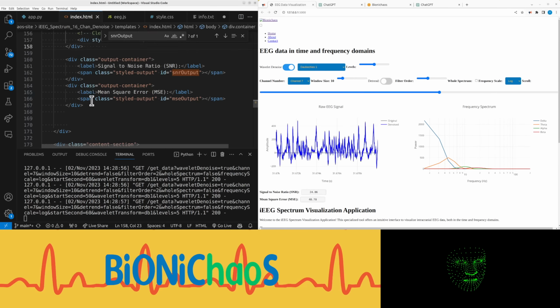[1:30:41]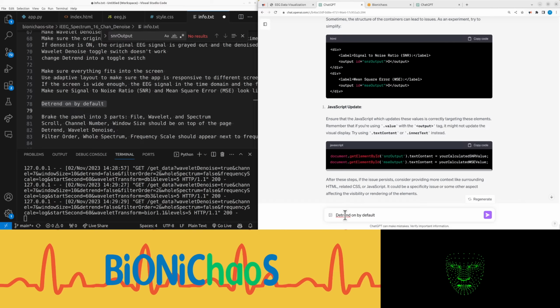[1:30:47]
So I think we're ready to publish. Might do it a bit later. Yeah, this should be an easy fix. That's working now. Moving on.
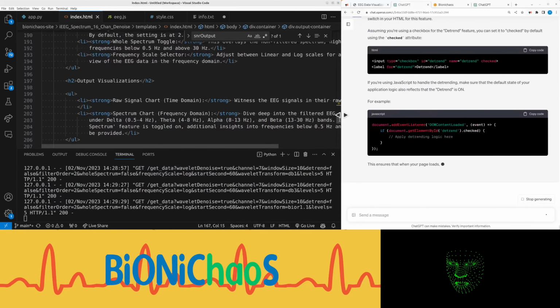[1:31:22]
Detrend on by default. It's suggesting to change HTML. It should be easy.
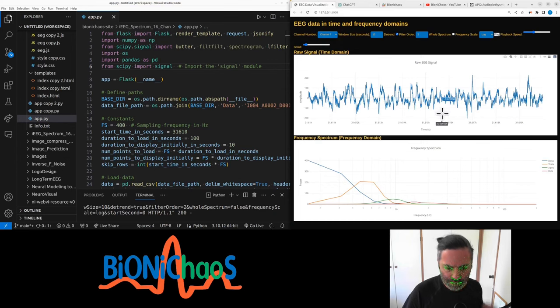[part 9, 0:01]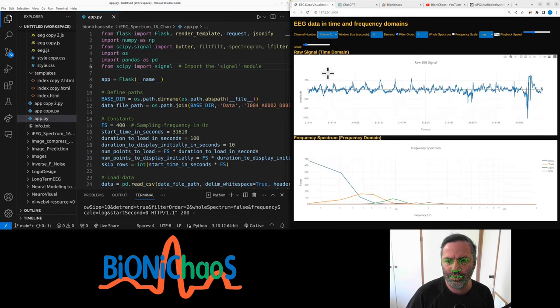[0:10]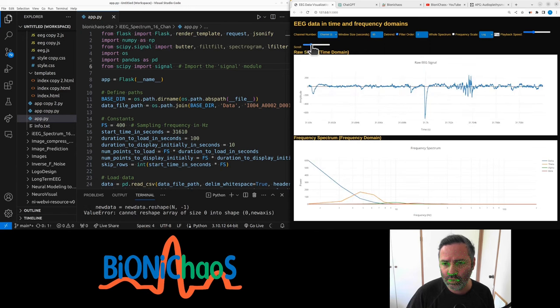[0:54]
And we get the ratio between delta and theta going up, because there's more high frequency components. Oop. So this obviously doesn't work well. Getting an error for this.
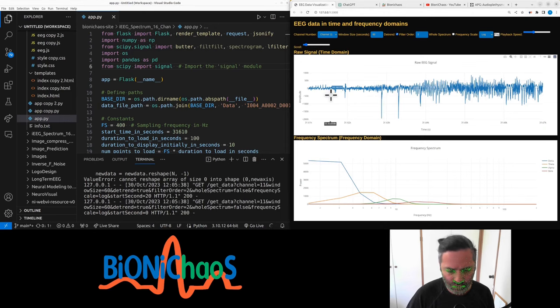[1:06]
So essentially this scroller is meant to scroll through the whole file, but it's exceeding the file length. Oh, sorry, the file is really long, but we're only loading a small portion, just so it works quickly enough, because we're not downsampling. The whole thing is sampled at 400 hertz.
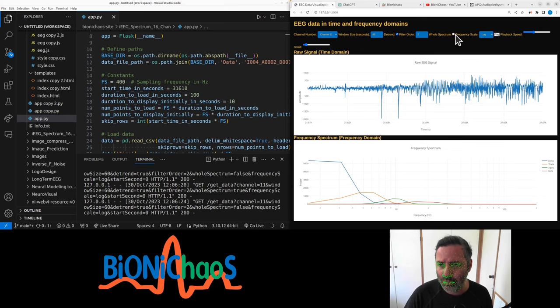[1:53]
Yeah, so we'll need to fix a few things, hopefully with this interface, how the data is loaded, how it's displayed, and so on and so forth. There's quite a few problems. There's an option to display the whole spectrum there in purple over here, or remove it. I think default will be removed. Playback doesn't work. It doesn't even look like a button to begin with. I couldn't even realize it's a button. Obviously, playback speed doesn't do anything.
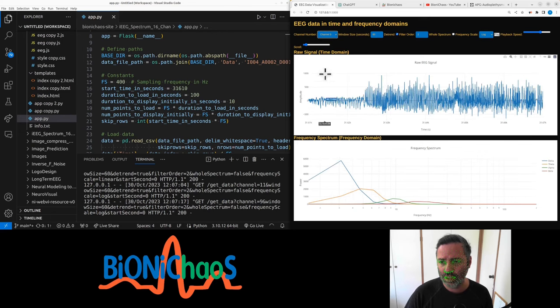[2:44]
Linear works. Yeah, so that's the linear scale. And then you can change it to logarithmic, so you can see more detail, because most of the frequencies are in the lower frequency range. Changing between channels works. Okay, so that's actually the seizure there, as you can see on the different channels.
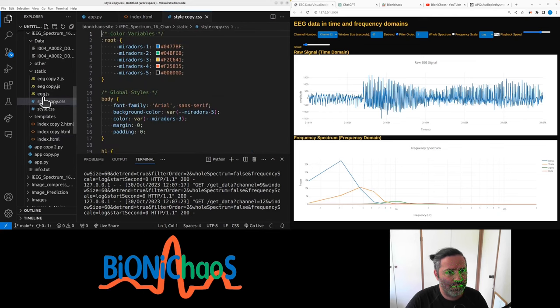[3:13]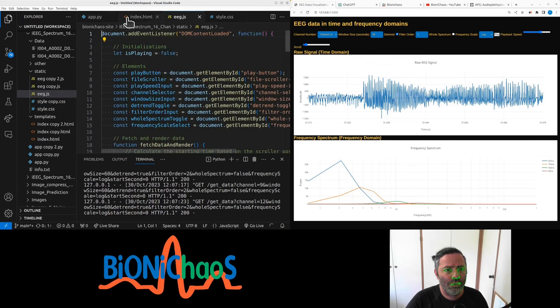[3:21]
So okay, how do we want to load it into ChatGPT? We have the HTML, the JavaScript, and the style sheet. Let's start with the HTML, then front end, then back end. Do style at the end. It's actually using our project color scheme, which is a good thing. But sometimes it forgets about it when it's making any changes, so I have to make sure it remembers to use it.
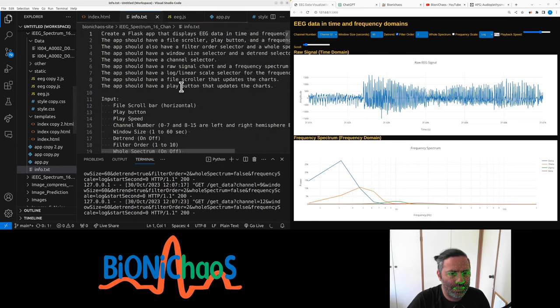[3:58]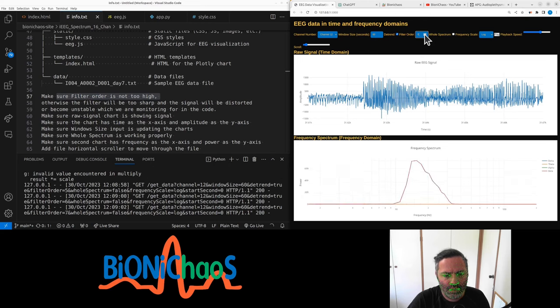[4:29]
Ah, and most importantly, we have these prompts. That's what we started with. We have the input, output, and the file structure. We had a problem with the filter order being too high, so we reduced it by default. I think it has to be below 5 or 4. Otherwise it will be too sharp and become unstable.
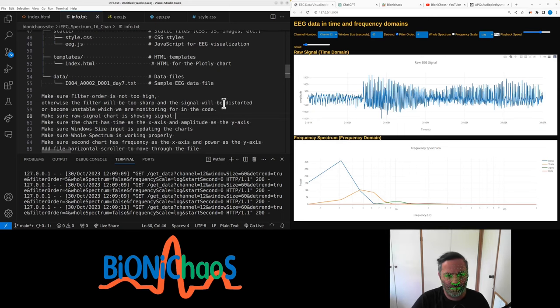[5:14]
Oops. The raw signal chart is showing signals, that's okay. Make sure the chart has time as the x-axis. It actually is time, it's just that this is a very long file. We're moving through the file, and this is displaying 60 seconds in it. There are questions that instead of the relative time in the file, it could just show 10 seconds, so 1 to 10 on the x-axis. Probably can make it switchable between relative time.
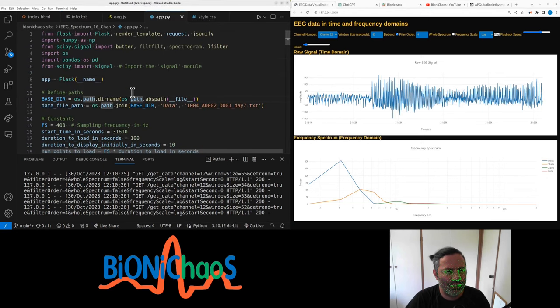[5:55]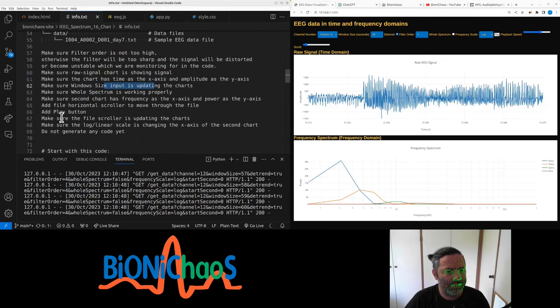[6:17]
The window size is working okay. We're actually loading 100 seconds of data. This only lets us display a maximum of 60 seconds, so that should be fine. But then this scroller, make sure it's updating the charts, that's okay. So this scroller, update, regenerate the whole code, blah blah.
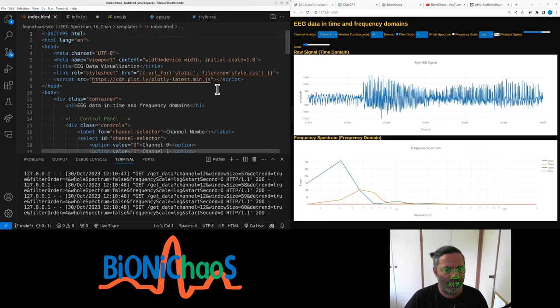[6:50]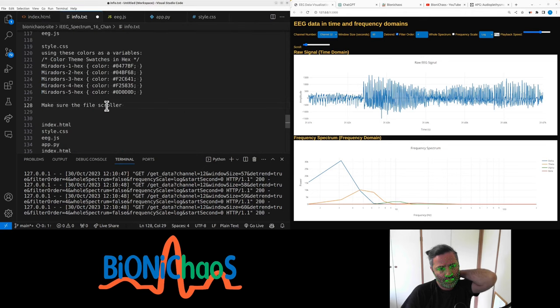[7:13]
Right, so we start with more prompts over here. Make sure the file scroller, let's actually check it. The file scroll bar, why is it maximum of 5? The scroller maximum value is the length. It shouldn't be of the file or of the loaded data, just say data.
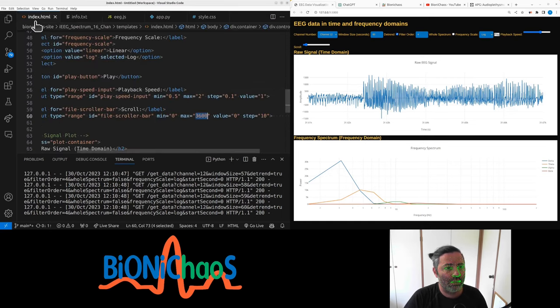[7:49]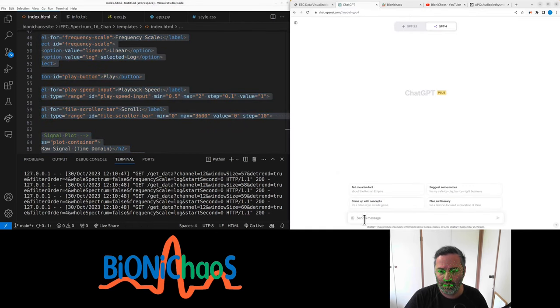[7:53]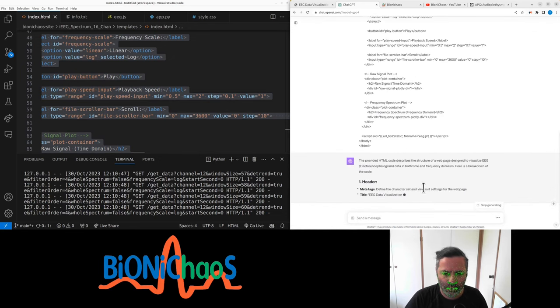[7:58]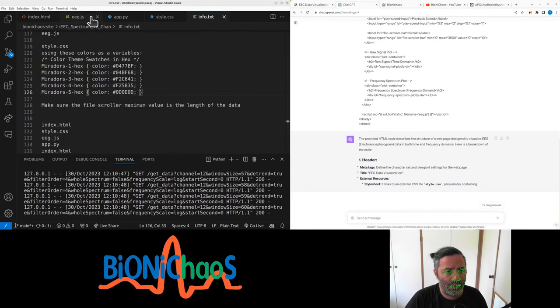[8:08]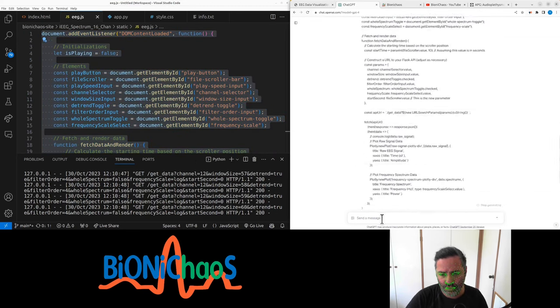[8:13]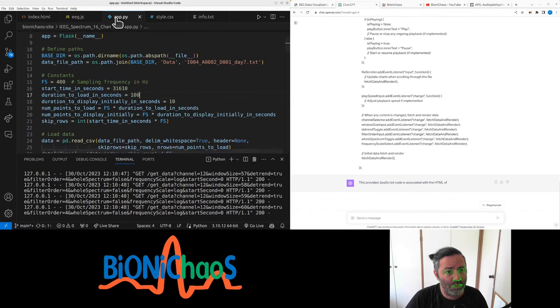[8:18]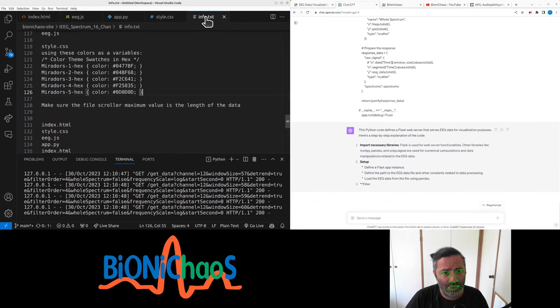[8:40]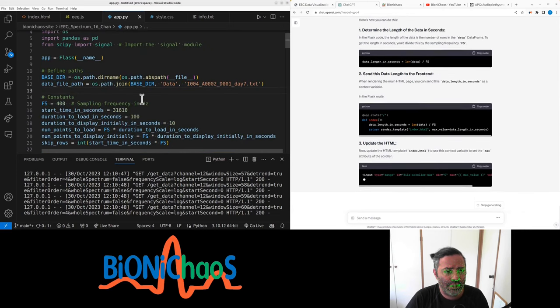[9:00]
Right. So let's pop in, I know those prompts are super long. We don't need to generate this, we're just using it for reference. Then we go with the JavaScript. We have done this before, should be okay. But yes, we are very likely to hit the 50 prompts per 3 hour limit fairly quickly. Yeah, we can stop generating that. We'll deal with the style CSS later. Right, just need to make sure it's actually giving us relevant stuff.
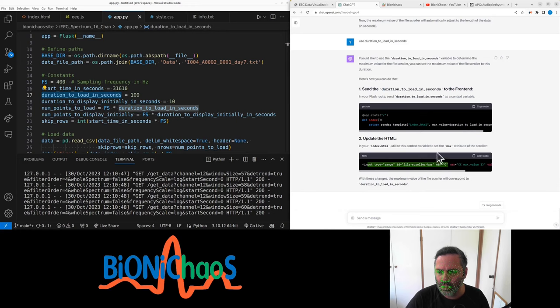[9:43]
Okay, pretty sure we already have it. Use duration to load in seconds. In the input range, set the file scroll to max value, so this will be essentially 100. Does that make sense though? Okay, let's see in Python. Return render template, max value to load, duration to load in seconds, duration to load, render template index. That sounds legit.
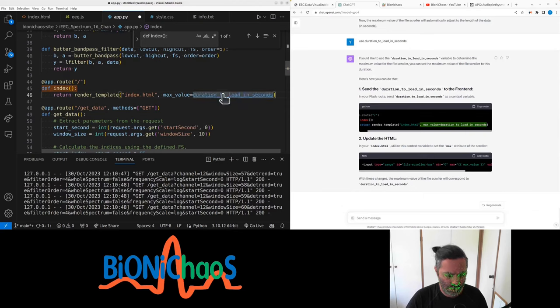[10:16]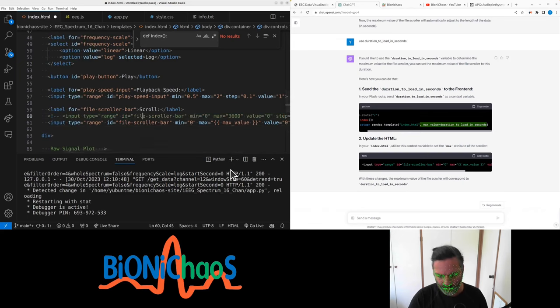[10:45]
Then in HTML we need to, the maximum value here can be replaced by max value. Surely this is not enough. Ah, no, it is okay. Okay, let's see if that works.
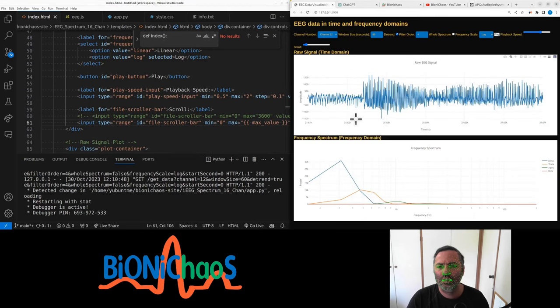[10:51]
Right, it does work. Okay, so we're loading 10 seconds worth of data. Check, so if we load it, 60. Right, so this is scrolling through the whole seizure.
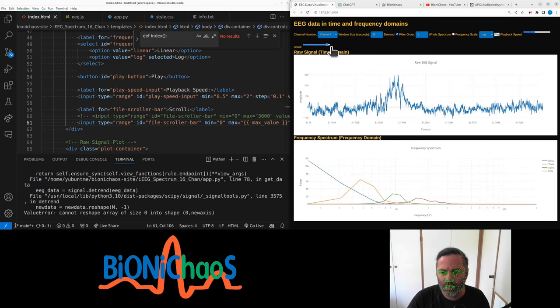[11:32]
So for example, if you load it 30 seconds, yeah, this is scrolling through the seizure, and I do get an edge error when I scroll to the very end. That's kind of okay because the interface is still working fine.
So that's working much better. Linear log works okay. Frequencies. Sorry, whole spectrum. Yeah, this is confusing. This needs to be.
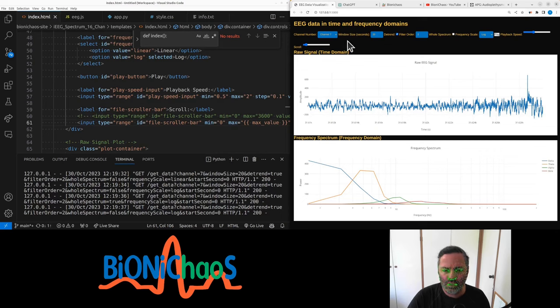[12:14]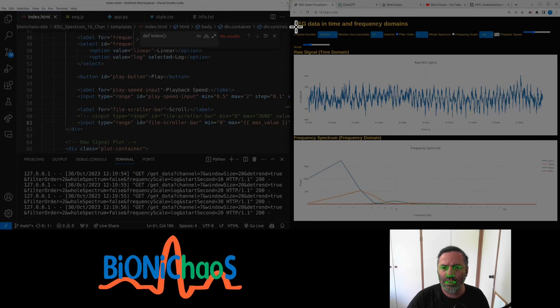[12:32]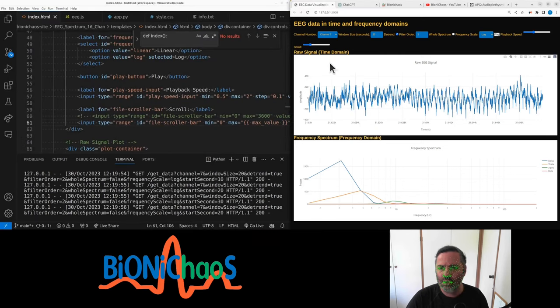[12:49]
The other thing we can do, but haven't actually tried before, is popping this interface into ChatGPT with an image and asking it to improve the interface, the HTML. So we can do this: paste the page, how the front panel can be improved.
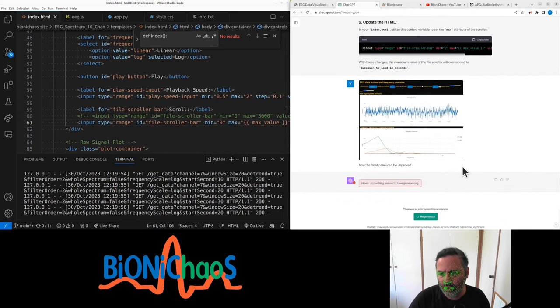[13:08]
Something went wrong. Regenerate. Improving the user UI. Consistent spacing and alignment. Use drop downs. Yeah, I don't particularly like drop downs. I like the scroll bars. Scrollers. They're pretty nice.
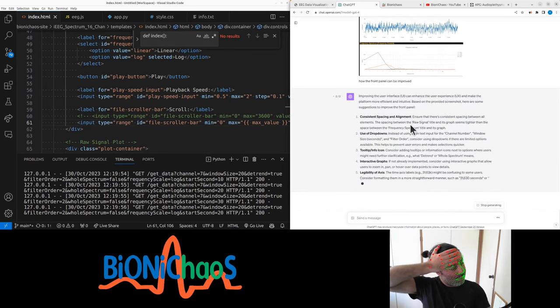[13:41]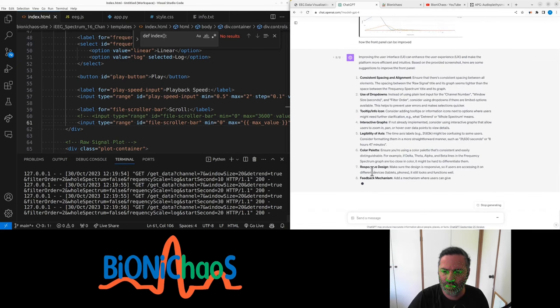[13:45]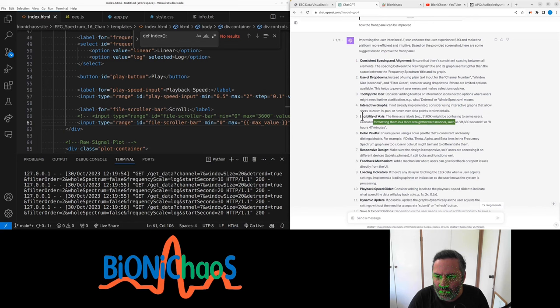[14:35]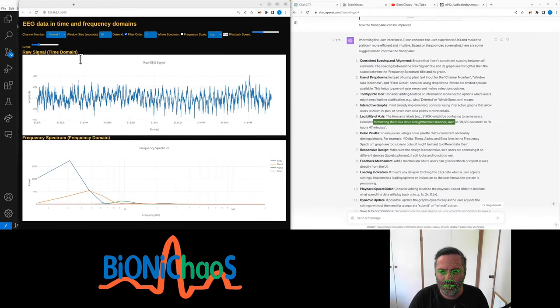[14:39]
Color palette. Are you suggesting to use our project color scheme for the charts? That's a very good suggestion. You are amazing. Keyboard shortcuts. A playback speed. Okay, so the interactive graphs, like what? Legibility, accessibility. Might be confusing to some users. Consider formatting them with more straightforward methods, such as the axis.
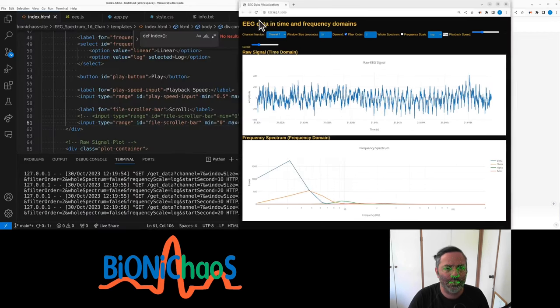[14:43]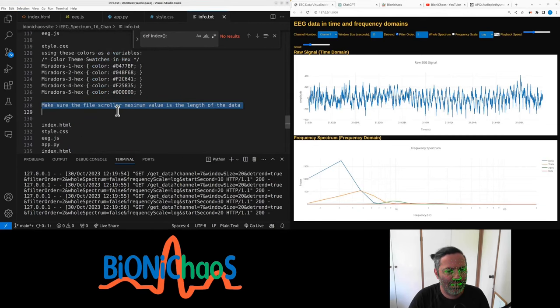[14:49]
Let's just pop it into another window. No wait, let me pop it back because then I forget that it's in another window. Let's do our prompts in here. So a couple of things. The chart labels are already there.
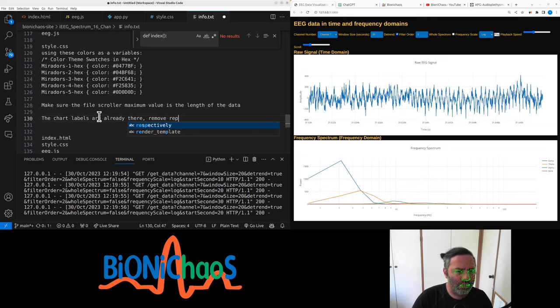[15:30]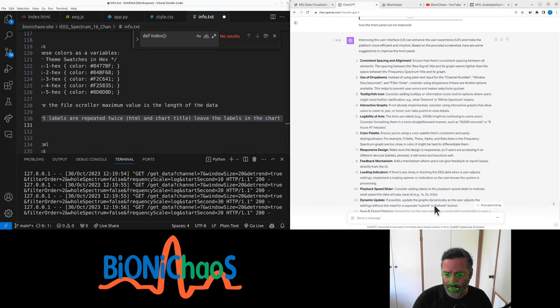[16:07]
Remove the HTML and chart title, which are repeated twice. Leave the labels in the chart. Let's start with this quickly. Should be an easy fix.
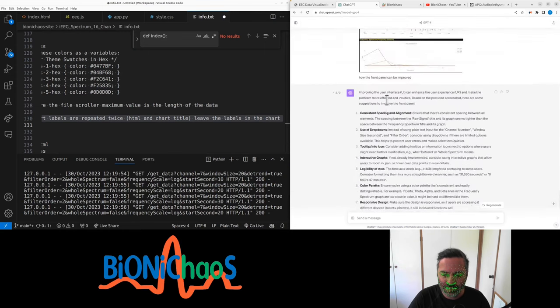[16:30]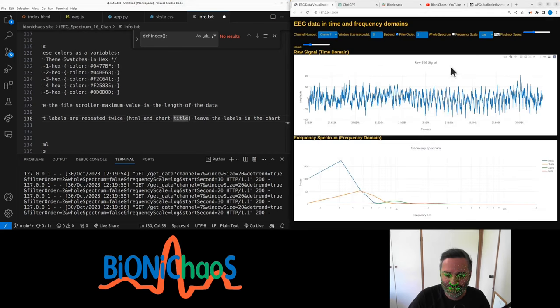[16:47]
Yeah, no, as in generate the code or regenerate the code. Yeah, tooltips could be nice. I think after uploading the image it went into some sort of architect mode, so it's not writing code anymore. Okay, let's do a few more prompts and then try and regenerate the code.
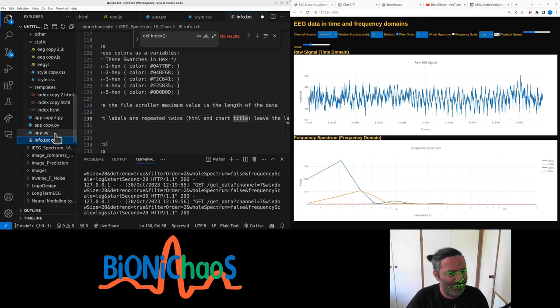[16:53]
Normally the way I do it is I have all those copies of the Python, HTML, and JavaScript. Now that it's working, I can remove them. We will start again. Just copy paste those for a sec, so we're not getting mixed up.
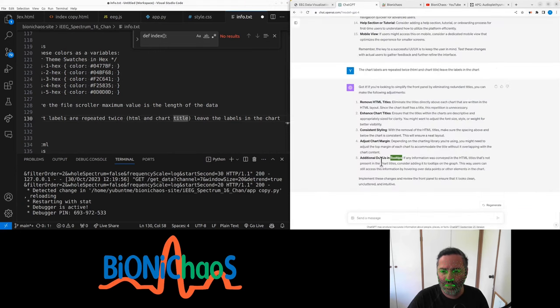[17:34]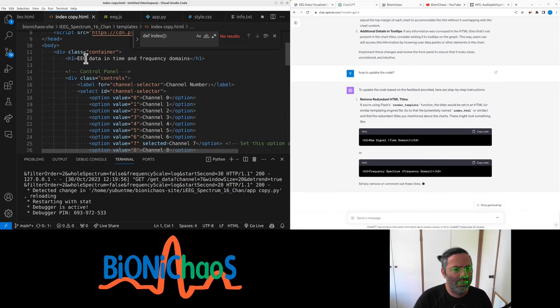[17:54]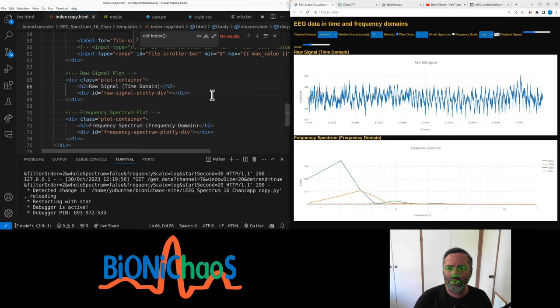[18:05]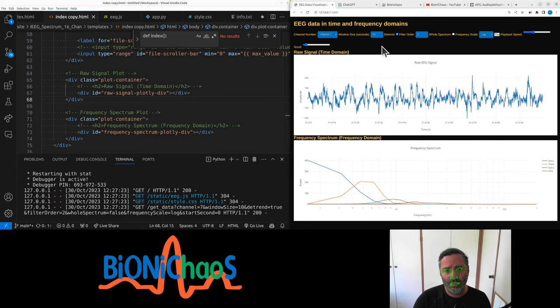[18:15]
Chat margin. How to update the code. Remove redundant HTML, so the raw signal time domain and frequency spectrum. Yeah, we can comment those out for a sec because we already have them in the... that didn't happen. Yeah, doing it in the copy, not the actual HTML.
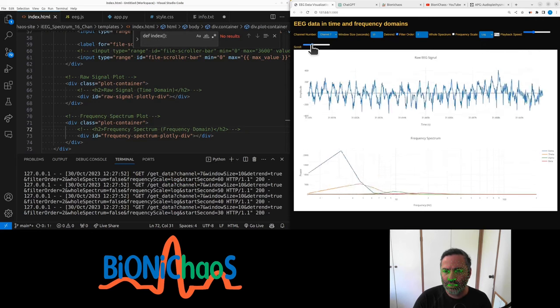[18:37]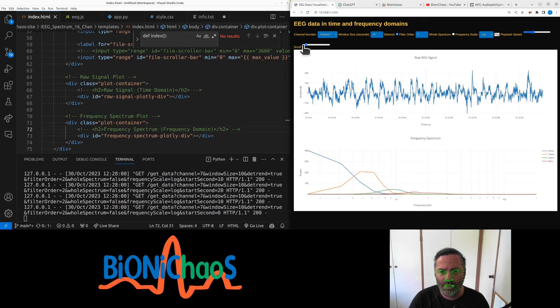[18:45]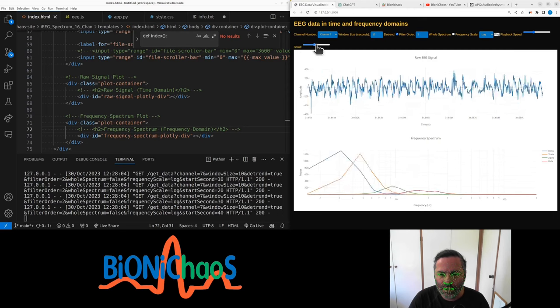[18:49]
Right, this is kind of better. So we have the scroller working. Yeah, it's giving an error when getting to the edge there. It's also funny enough not getting to the edges at all, but it's okay. So we have a seizure in this file.
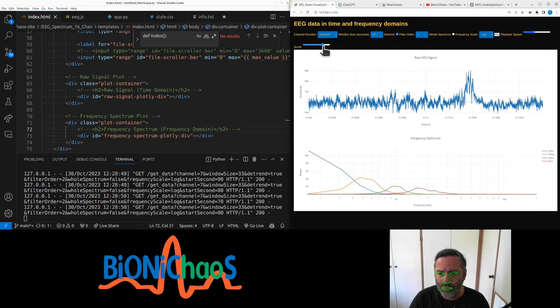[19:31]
Yeah, so you can see during seizure the ratio between delta and theta is increasing a lot. Have to kind of look at it case by case. So this is seizure onset, where the seizure starts, and this is where it ends. So it's actually a good bit to test for.
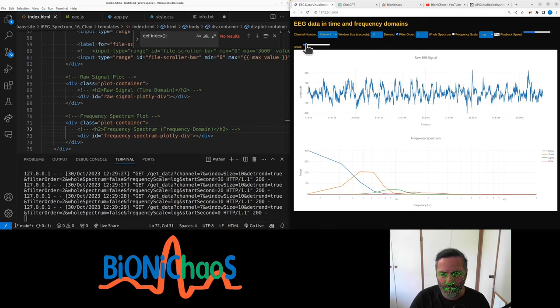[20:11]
Yeah, I don't like this control. I can't hit that button. And why? Just keep it to 10 seconds. It's kind of default. Yes, you can see the ratio between delta and higher frequency components, and during seizure the ratio increases. Well, not always, but tends to increase.
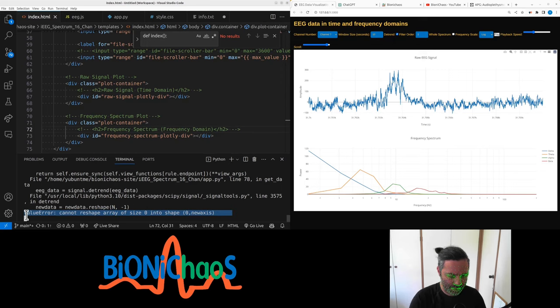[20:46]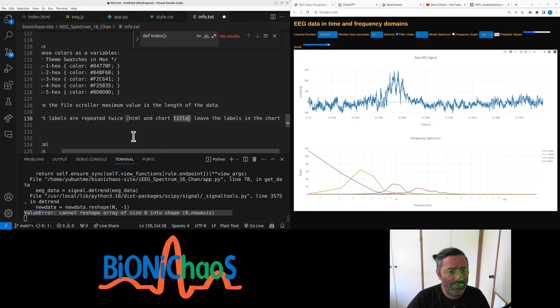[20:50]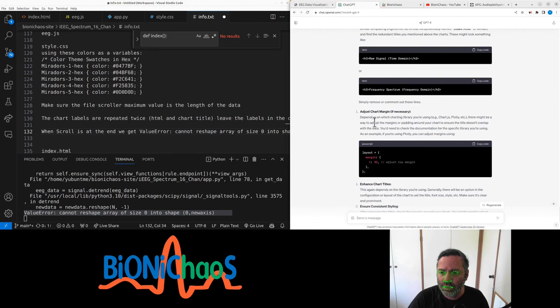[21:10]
I just have to make sure we remember that the amplitude is scaling there. So this is plus minus 400, whereas the baseline is plus minus 100. But we get this error when we get to the end. Control Shift C, let's pop it in there. So when this scroll is at the end, we get this error margin.
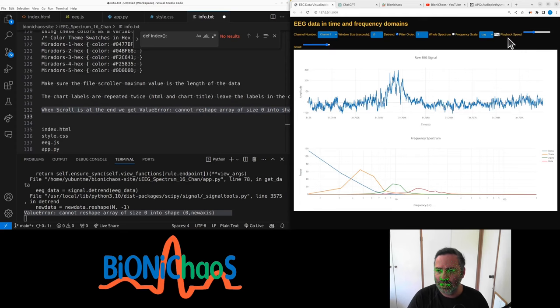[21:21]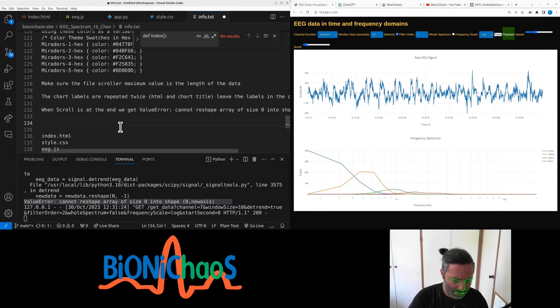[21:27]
I'll deal with the style CSS later. Speed up and scroll. What's more important is when playback doesn't work. So let's trick ChatGPT a bit. We'll just ask it how it gets this, which is, by the way, from Copilot: get the current value, add one to the current value, set the file scroll to the new value, update the chart.
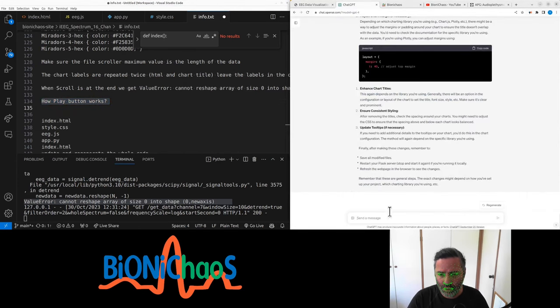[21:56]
Does it work? Let's ask ChatGPT. I think Copilot is making too many assumptions. Is it actually how it works, or is it how it's supposed to work? Where is it in the code? There isn't a clear implementation. Yes, we would like guidance on how to implement the play button functionality.
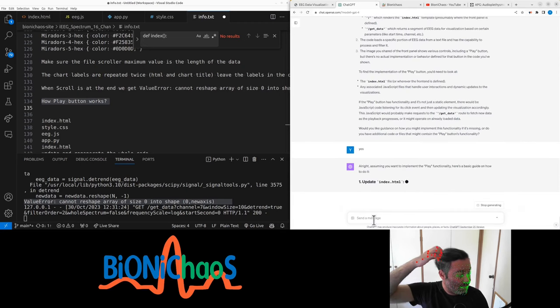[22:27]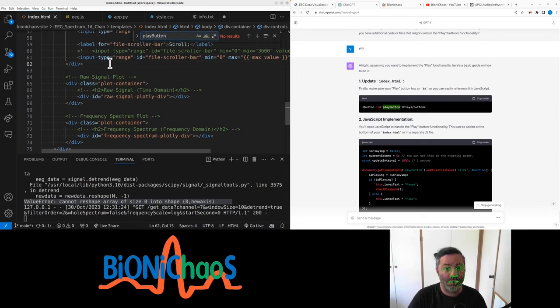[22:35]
So in HTML, we should have the button already, because I can see it on the screen. Or is it just called play? Play button. Okay, I have to change it, because that ID is super important. No, we don't need a pause button.
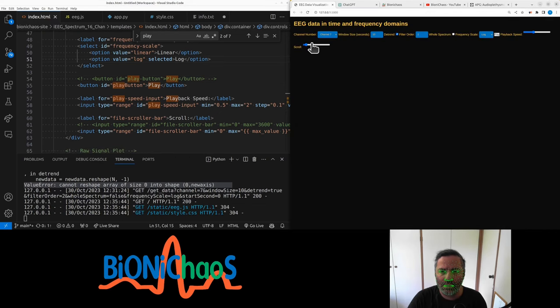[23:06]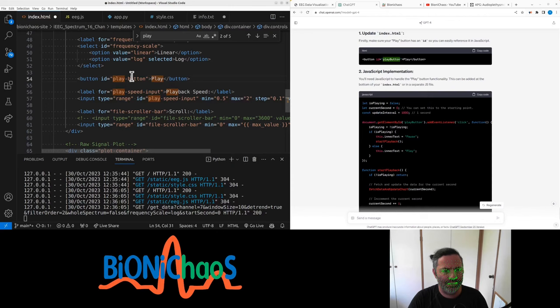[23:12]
And now in JavaScript, what? I don't know why it doesn't remember the previous code. Okay, in JavaScript, how is 1000 is 1 second? If we have 400 as sampling rate. That's weird. We have this code already.
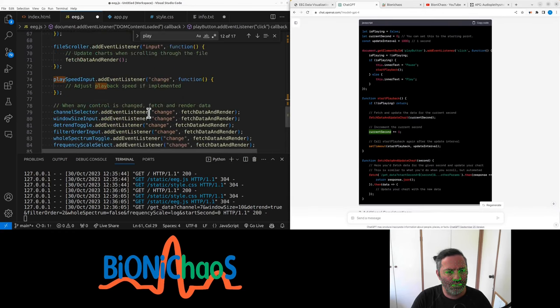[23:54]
Now we need this start playback button. Yeah, increment seconds by one. Should already have the fetch. Fetch an update. Start playback. What? Fetch the data. So where's the current? Current second.
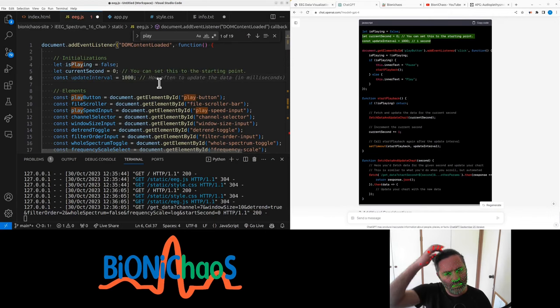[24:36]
Let is playing false. Why is update interval 1000? How is it 1 second? How often to update the data? Update interval, okay, sorry. And that's in milliseconds. Set timeout.
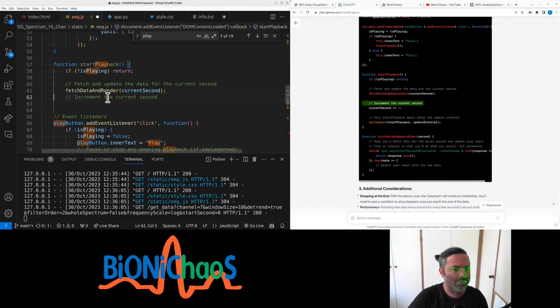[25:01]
Start playback. Fetch data. Plus one, that's okay. Call start playback again after update. Set timeout, start playback, update interval. That's correct. Now in fetch and update chart.
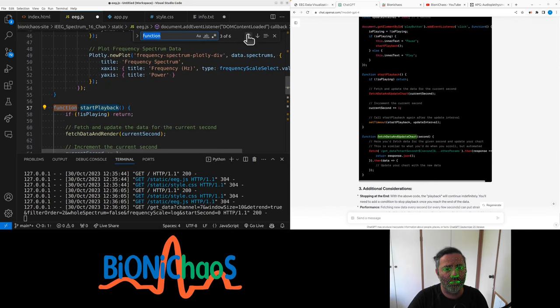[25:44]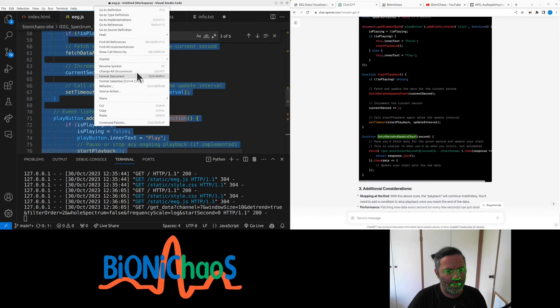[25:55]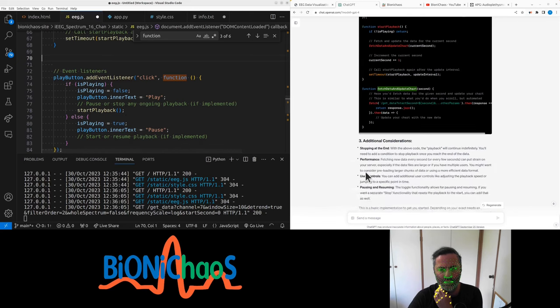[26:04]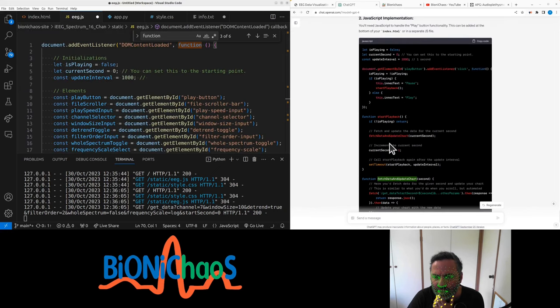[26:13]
Do we have it already? No. So how many functions do we have? fetchDataAndRender, start playback. Can we format document? Why can't you just do it in fetch and update chart? Where is second coming from? I have a feeling I will be getting errors.
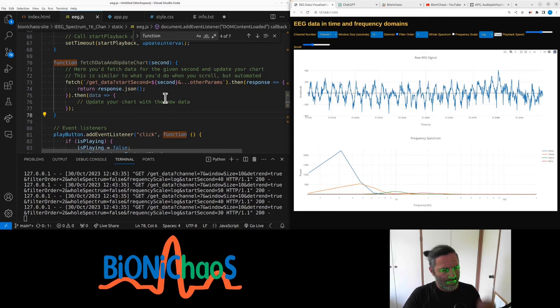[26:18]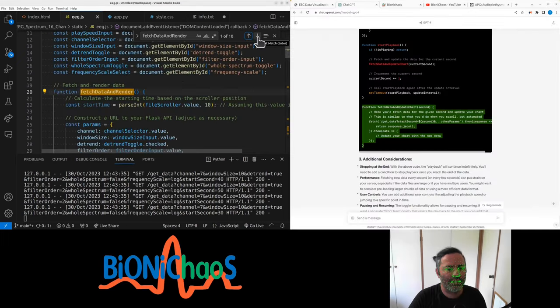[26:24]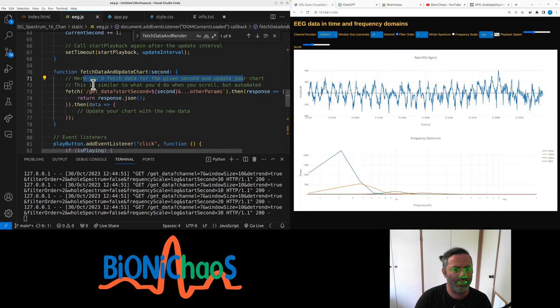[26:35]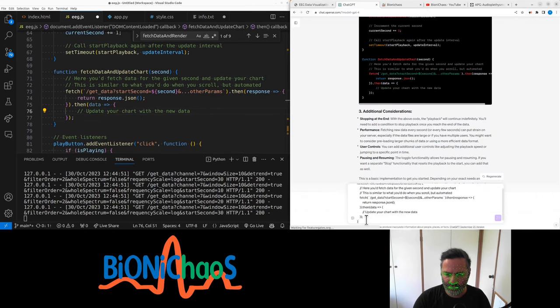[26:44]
If play and pause is too complicated, might get rid of it for now. So why fetch and render cannot have a second as an input? It's a bit of a mystery. This is similar to what you do when you scroll, but automated, updating the chart with new data. So have you finished with this? No. Why is it loading forever? It keeps coming up with error messages way too often. No, what is it doing?
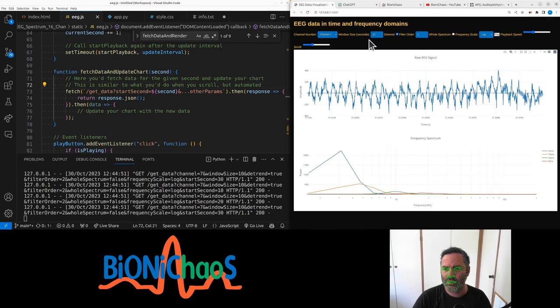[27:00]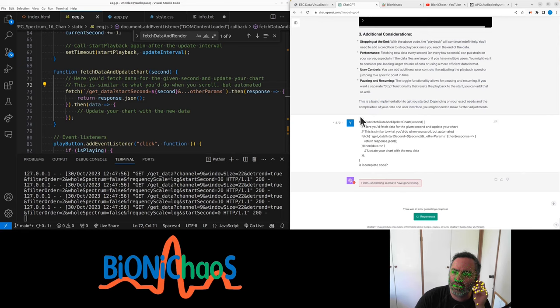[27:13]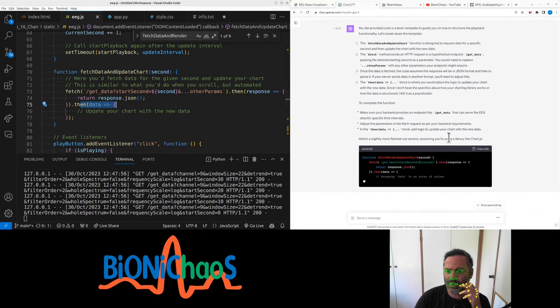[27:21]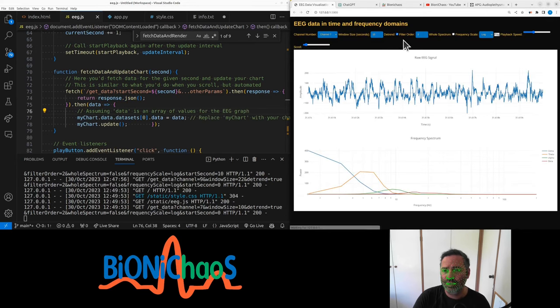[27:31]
GPT-4 is ridiculously slow. Yeah, we'll probably hide play and speed for now and make the scroller wider. And GPT-4 giving us grief. It knows what I'm using, right? Assuming chart.js. Actually not using chart.js. Right, so returning response JSON. This thing would not work. Anyway, we hide the playback for now.
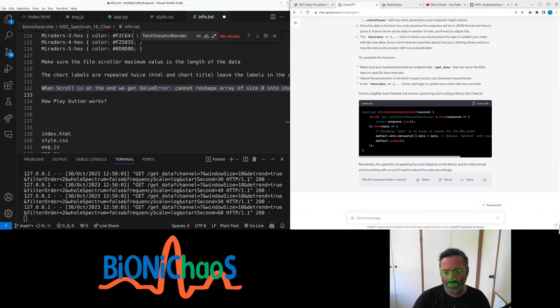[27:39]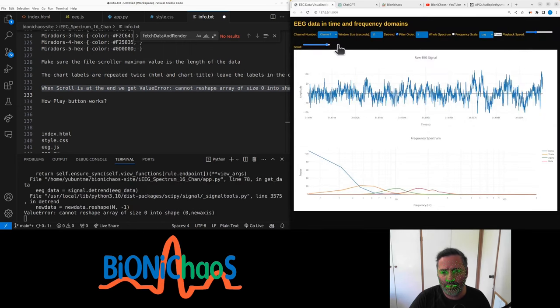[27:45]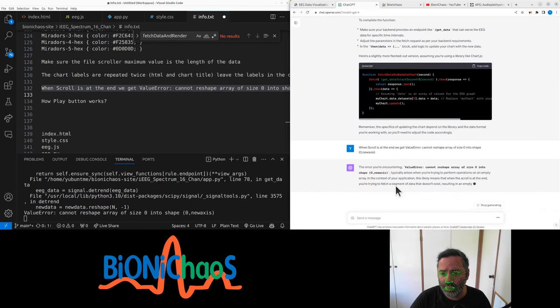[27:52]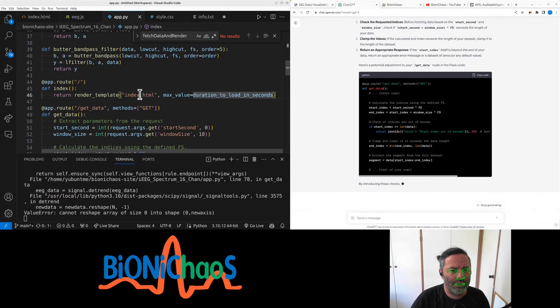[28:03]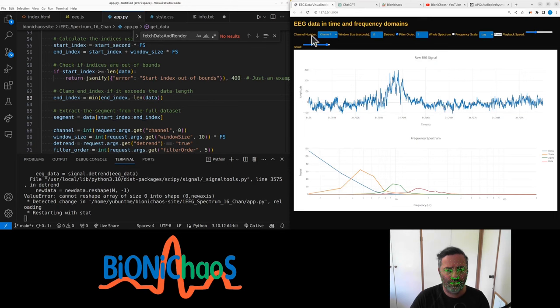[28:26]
It can fix this scroll. It's an edge problem when we get to the end of this segment. We get an error. Okay, so we can get that index. This is in our Python code. Get data, fs, start index, end index. If start index is out of bounds, we'll clamp the index if it exceeds the data length. Should be the max, remains the same. We should check for edge conditions.
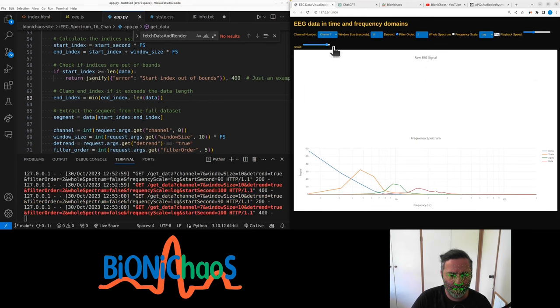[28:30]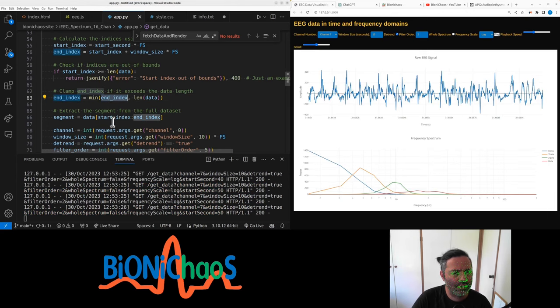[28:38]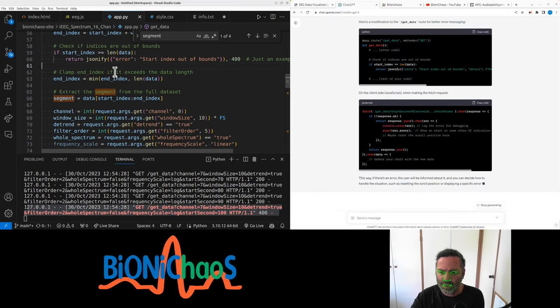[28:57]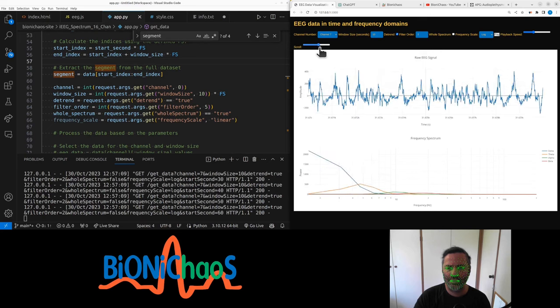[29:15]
Yes, it's giving an error, but why not just correct for it? That doesn't clamp the index if it exceeds the data length. It doesn't make sense. I have a feeling Copilot could do a better job. This way, if there's an error, the user will be informed about it, and can decide how to handle situations such as resetting the scroll position. Yeah, we should just get there to begin with. Regenerate this. Yeah, don't like. Yeah, I think it should be okay.
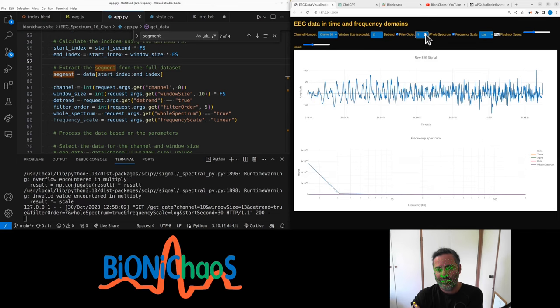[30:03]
I'm getting that error on the server side, but for the user, it actually looks fine. Yeah, whole spectrum works okay. Channel selection works fine. Seconds work okay. Right, detrending is sent as the signal around zero. That seemed to work fine as well. A filter order actually can be a bit higher. Probably should be limited at 5 instead of 10.
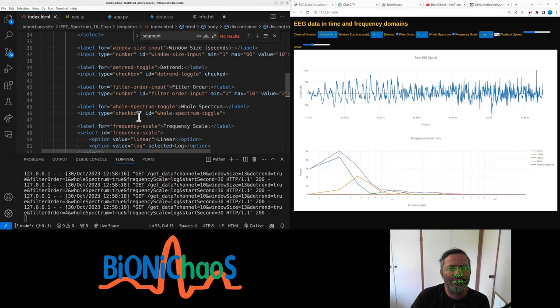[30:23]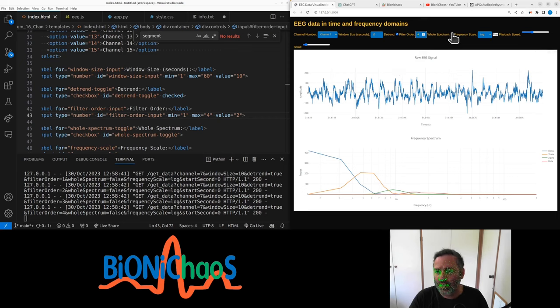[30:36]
Yeah, I'm not sure what's going on. Might just limit filter order. Max. Let's make it 4. Yeah, it works a bit better. Whole spectrum is turned off by default. You can turn it on if you want. The X axis for the frequency spectrum is logarithmic by default. You can turn it into linear if you want to.
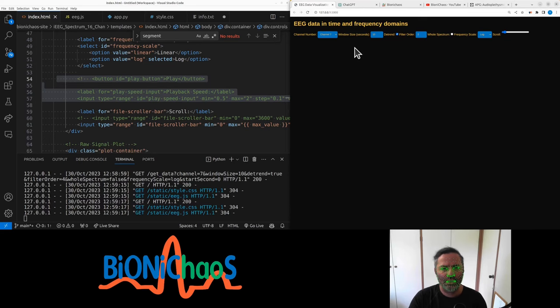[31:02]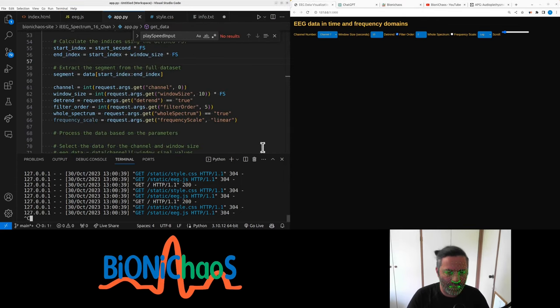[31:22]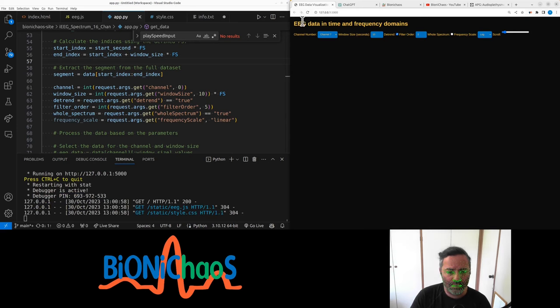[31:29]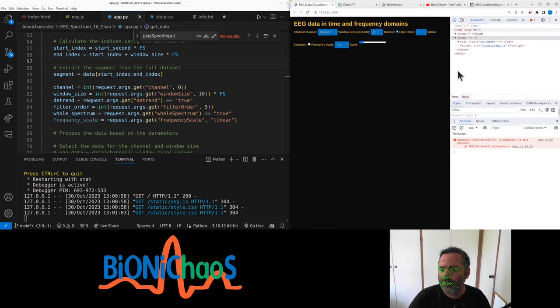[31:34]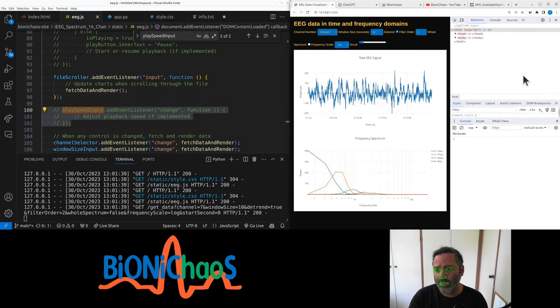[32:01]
And play doesn't work, so we might actually hide it for now. Okay, that's unusual. I'm not getting any errors. What's up? Why is it not working? Takes some time to load, which is a whole other problem. Play button is not defined. Well, that's okay because I removed it. JavaScript 82. JavaScript 100. Yes, I removed play speed as well. Right, now it's actually running.
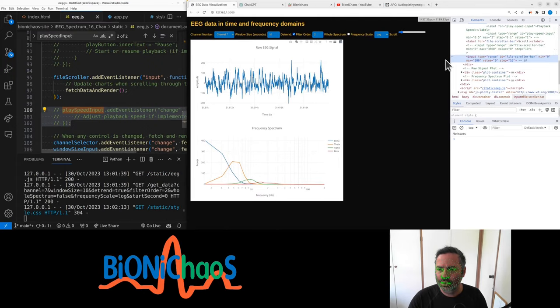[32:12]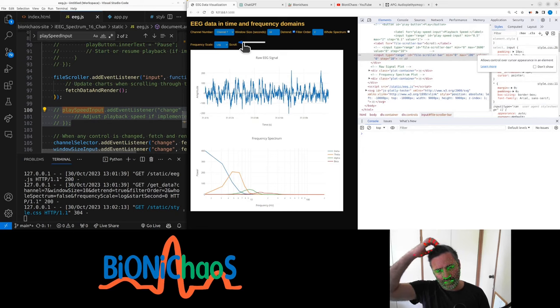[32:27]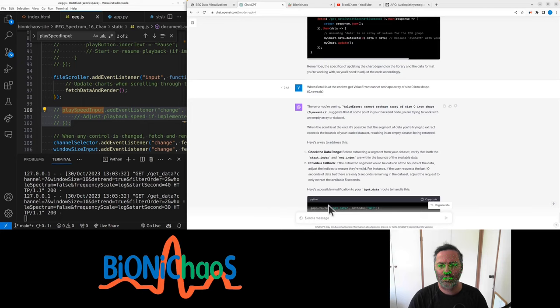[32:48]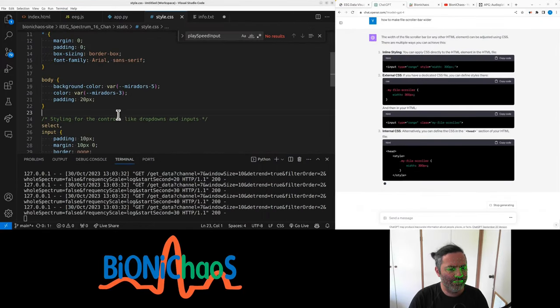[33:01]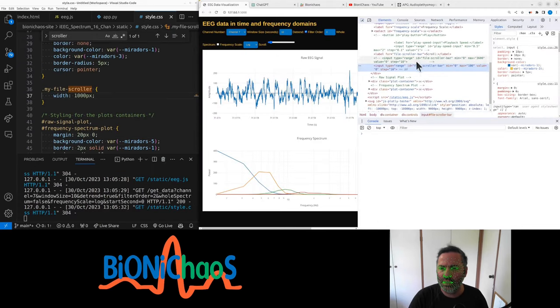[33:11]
And this scroll should be wider. We don't need a border. We'll make this scroller. Does it steps of 10? Maybe it's okay. How to make it wider. We have this scroller in here. And no, that be that ID. Actually called, yeah, file scroller bar.
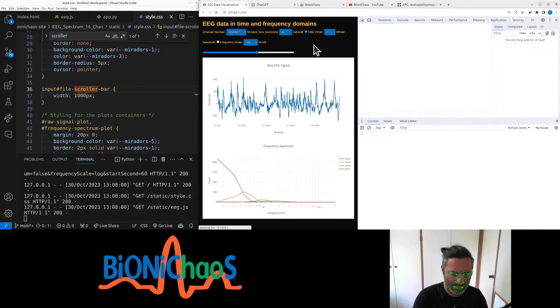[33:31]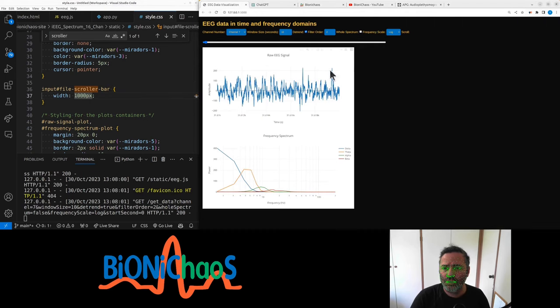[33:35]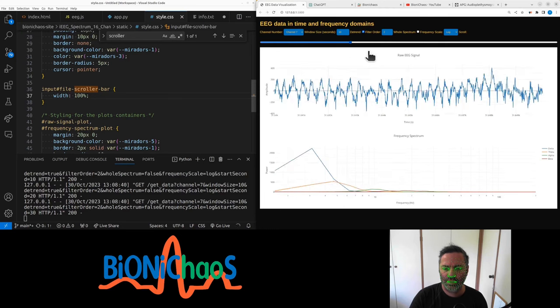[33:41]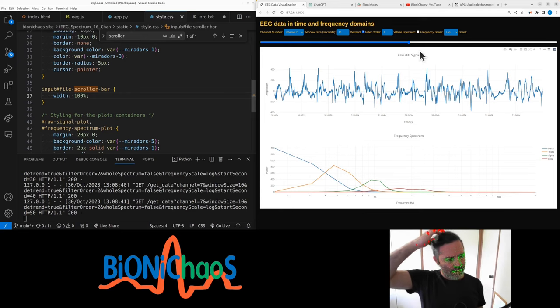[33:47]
Oops. Right. So that's what it should be. Gold. Right, so that's working. Okay. Only took an hour.
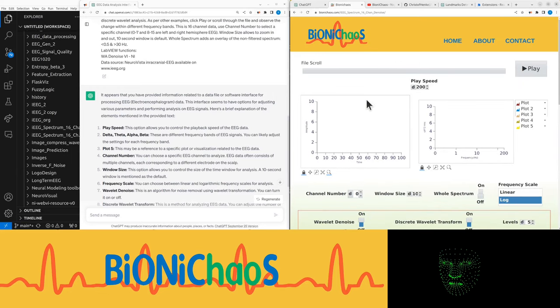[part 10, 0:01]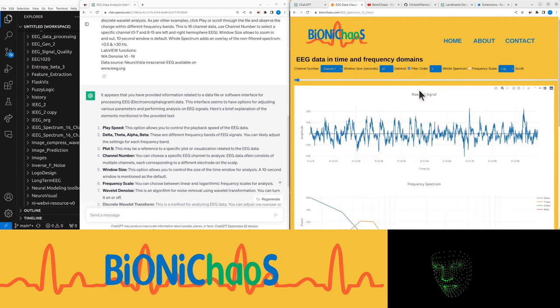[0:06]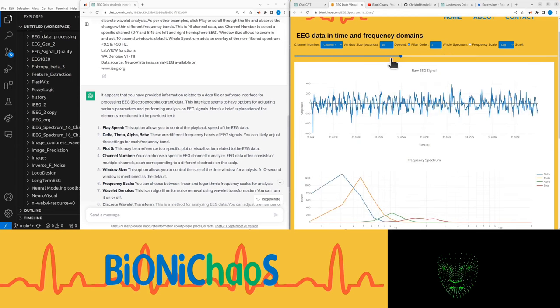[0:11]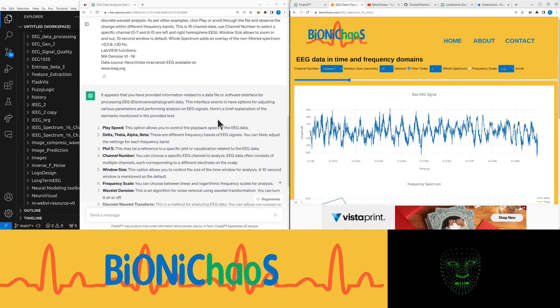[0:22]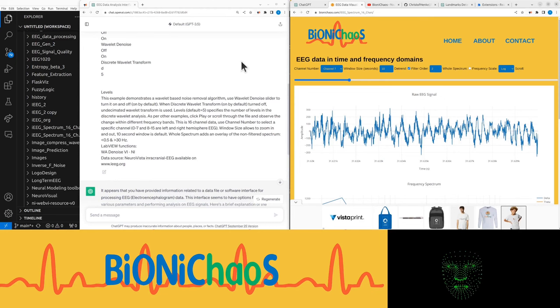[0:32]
It should be similar to what we did yesterday. EEG spectrum, except in this one we'll have options to remove some of the noise. So the tool should look pretty much the same. Still using GPT 3.5, and I understand, yeah, trying to generate the prompts.
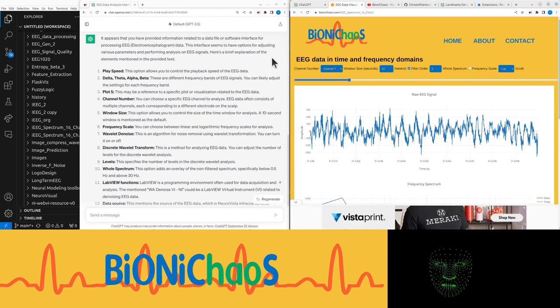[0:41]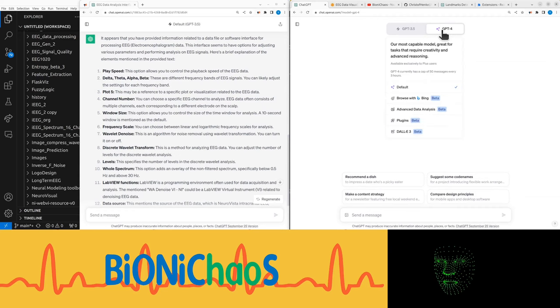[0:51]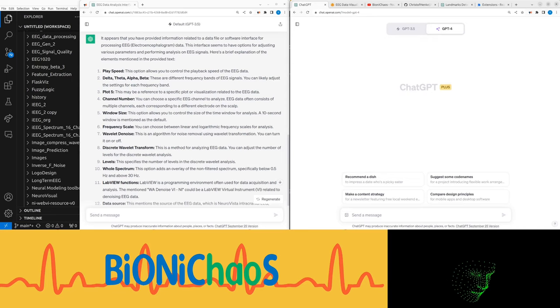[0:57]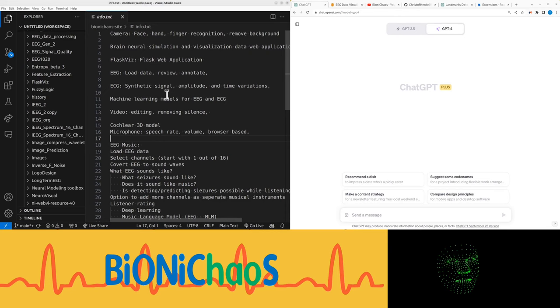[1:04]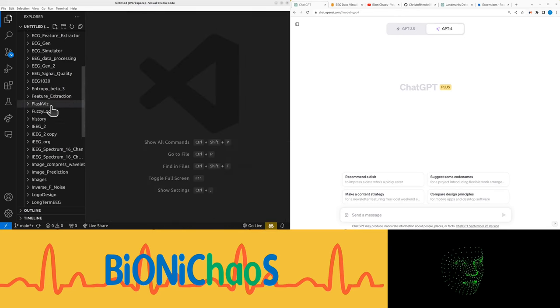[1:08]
First, mainly so I don't reach the prompt limit, which is currently sitting at 50 messages every 3 hours. Well, might as well, we're already 5 minutes in. Let's start popping stuff in.
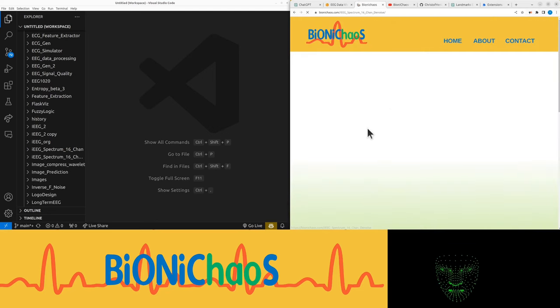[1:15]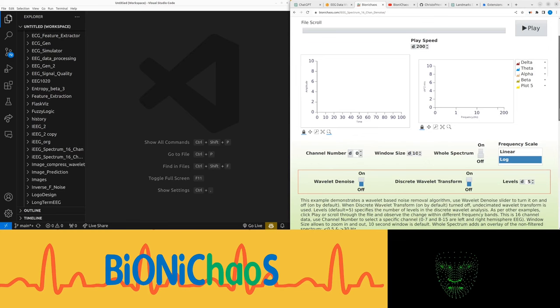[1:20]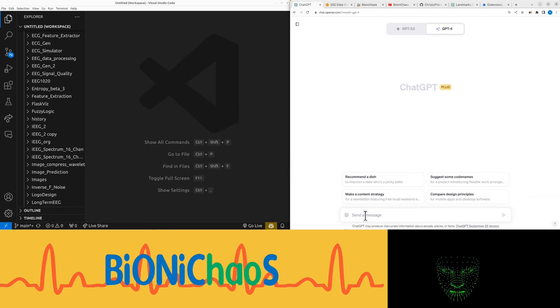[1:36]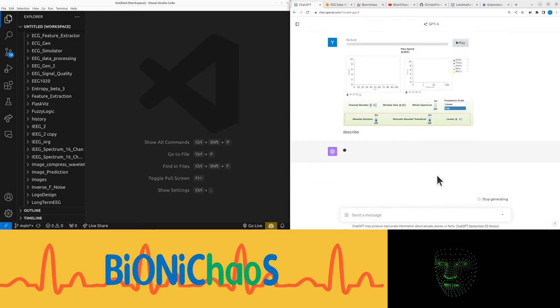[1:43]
Let's actually open another tab with the new tool, so it will replace this thing. We actually can generate an image out of this, so that it goes into ChatGPT, describe the image, obviously. Yes, it is a user interface.
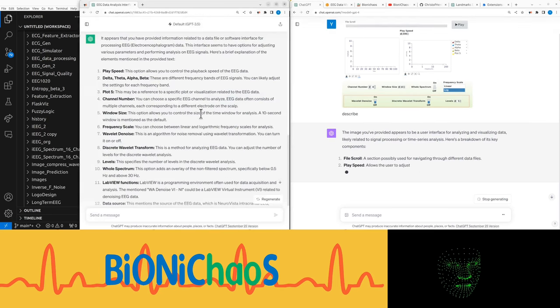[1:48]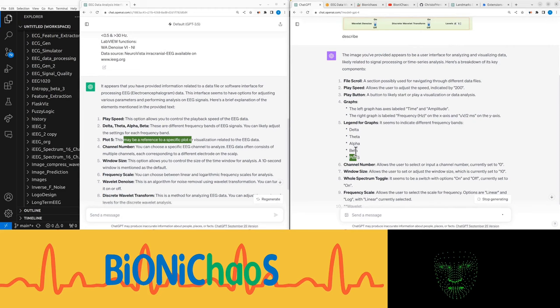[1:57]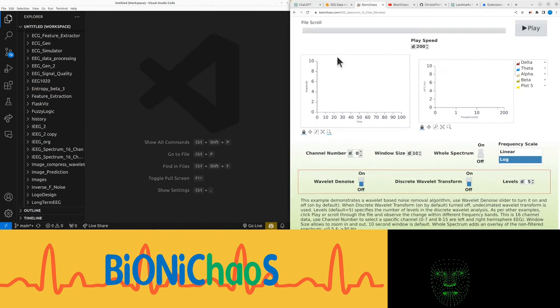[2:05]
You are absolutely right. Plot 5, what's the plot 5 that keeps? Ah, yeah, there is a plot 5 there. That's a bit odd. Yeah, you can ignore that for sure. And now we should have more context. So, EEG. Yeah, that's the denoise.
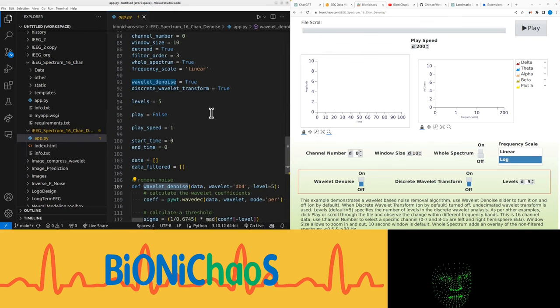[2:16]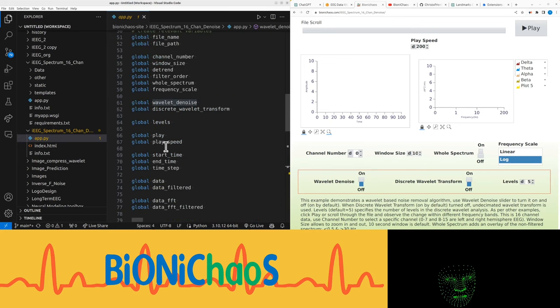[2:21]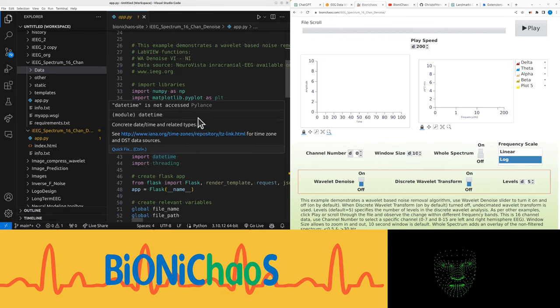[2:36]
We'll open this one as well. We already have an app for it. It's not a bad start. I don't know why there's so many globals. I suspect this was generated by GitHub Copilot. So we have the data file copied 10 times everywhere that we don't actually need. Yeah, I'm pretty sure this was GitHub Copilot.
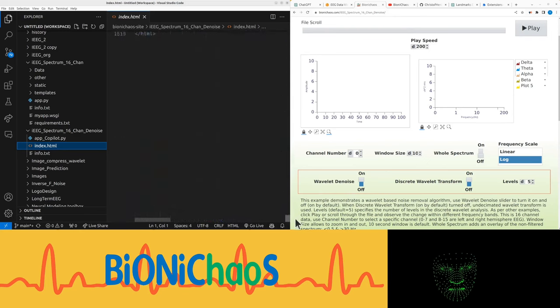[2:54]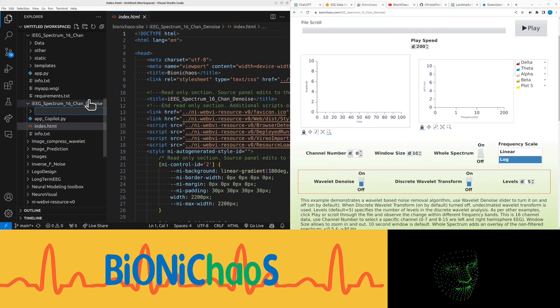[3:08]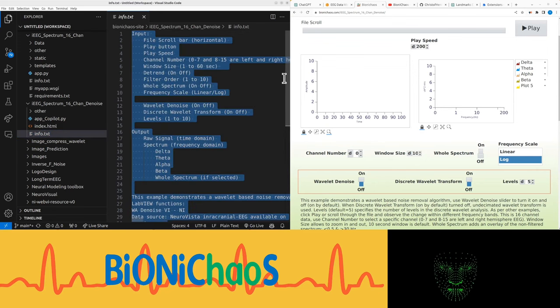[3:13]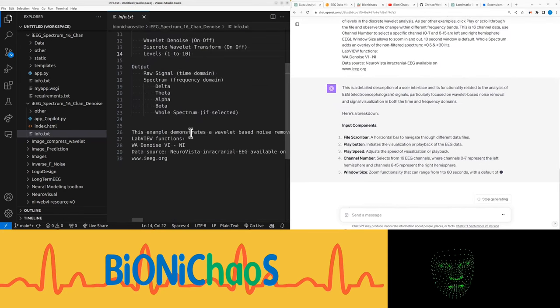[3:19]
Index.html is this current thing that we should get rid of. This was the old LabVIEW stuff. HTML was generated. It's not great at all. Really difficult to work with. So we can pop it into Ava. The info should be legit. This should be a better description. Yeah, we can ignore the play speed and play button for now, as we did in the current tool.
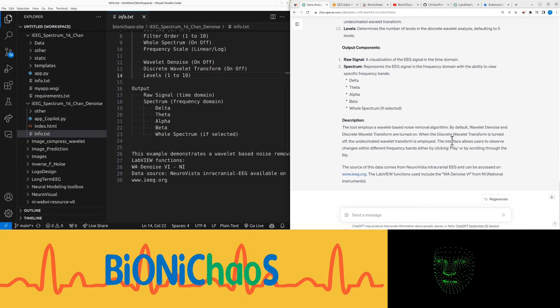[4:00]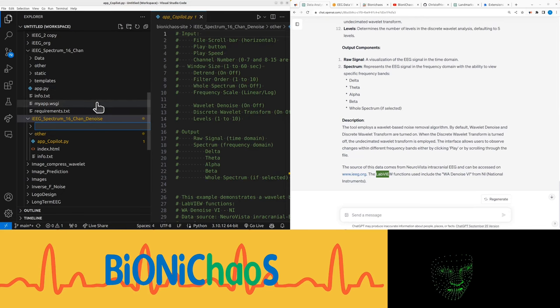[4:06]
This is a detailed description of a user interface and its functionality related to the analysis of EEG, electroencephalogram, signals, particularly focused on wavelet-based noise removal and signal visualization in both the time and frequency domains. The tool employs a wavelet-based noise removal algorithm. By default, wavelet denoise and discrete wavelet transform are turned on. When the discrete wavelet transform is turned off, the undecimated wavelet transform is employed. The interface allows users to observe changes within different frequency bands, either by clicking play or by scrolling through the file. Yes, we have data.
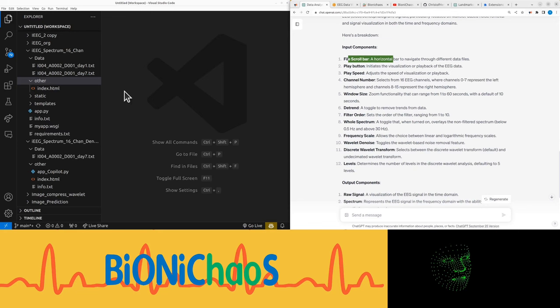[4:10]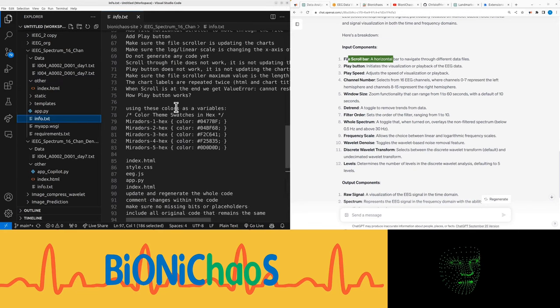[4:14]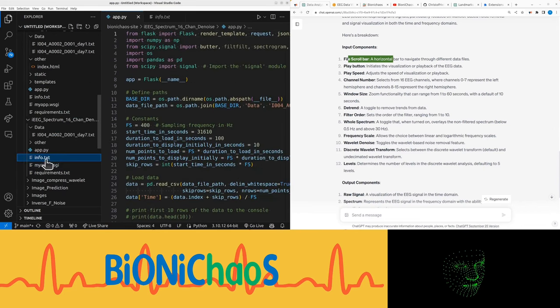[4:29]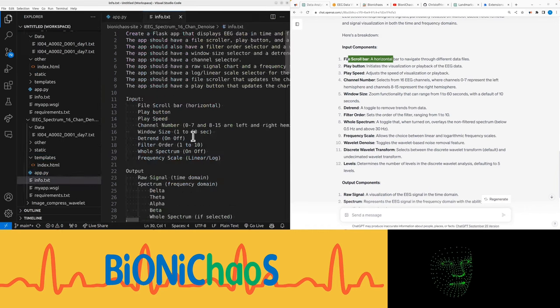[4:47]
Okay, we have this info. Let's not copy this. Should we just copy everything? So we have that, and we need the templates and static. And yeah, the name would be different, so I have to remember to change the name. Template, static, this is the app, and this info file essentially should be changed to that. Yeah, won't worry about the play button or play speed for now.
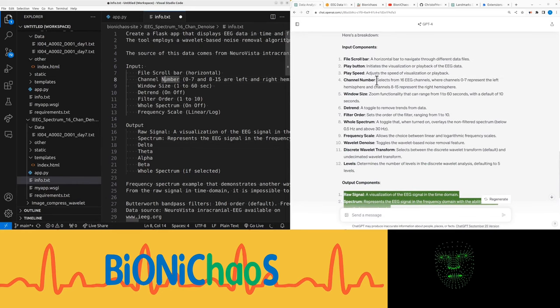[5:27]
We have the tool employs a wavelet-based noise removal algorithm. Yeah, that's right. We need that. So we're creating a Flask application. Yeah, we're not using LabVIEW anymore. Just Python. That's the source of the data. Now input. Have this file.
No, it's not through different data files. It's through the same data that we loaded into, that is currently being loaded. Window size. Yeah, default of 10 seconds is fine. Yeah, we have detrend. So that should bring the signal around zero. This actually can be ranging from 0 to 5.
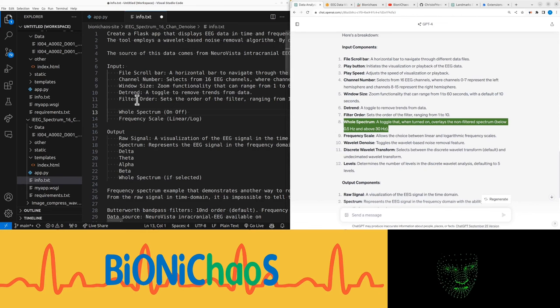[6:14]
Larger filter order used to cause all sorts of grief. Toggle that when turned on always. The non-filtered spectrum below overlays. Yeah, the whole spectrum. That's correct. Frequency scale. That's right. Now, this is the important bits. Let's just put them in first. The wavelet denoise. Yeah, these three.
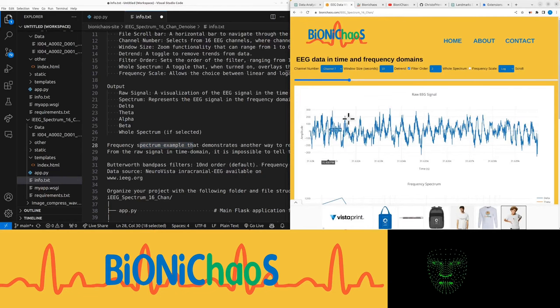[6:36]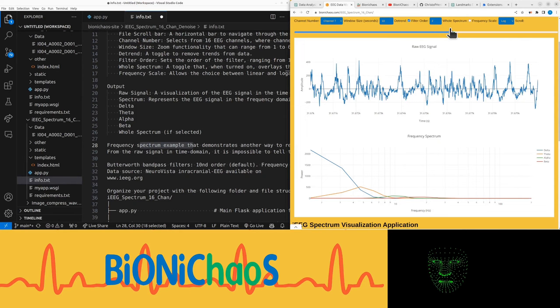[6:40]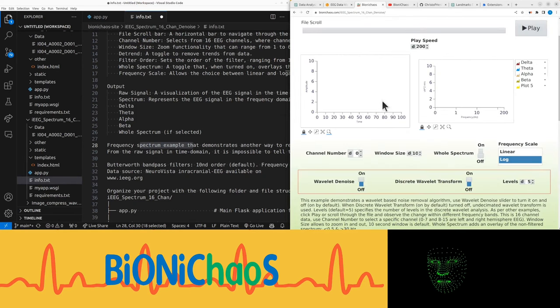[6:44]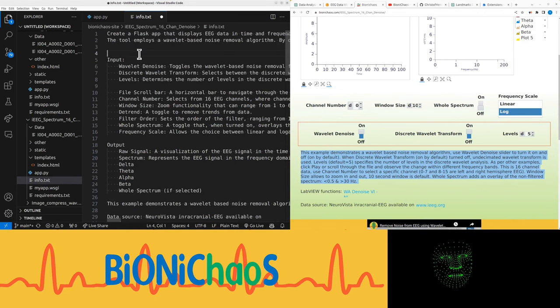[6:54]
Okay, so this is what we currently have. That's the simple frequency domain review. We're using the same data. And this is what we want. Yeah, we want this description as well. Or is it already there? Yeah, we mentioned this at the bottom there.
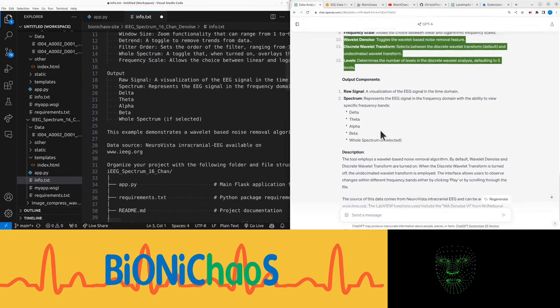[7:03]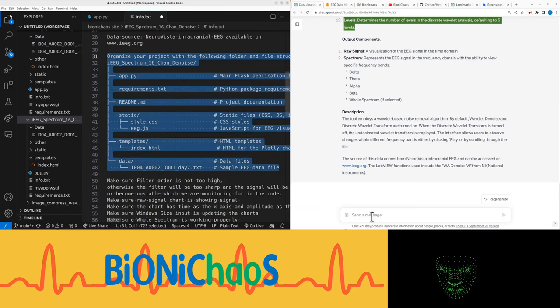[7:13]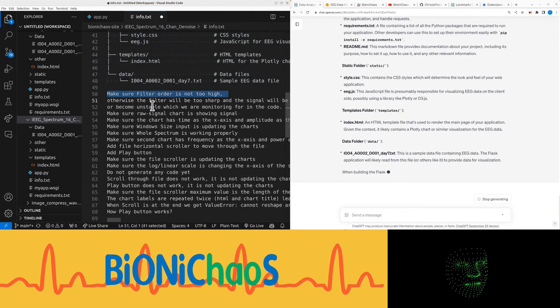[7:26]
This is the folder structure. It should be the same as we had for the previous tool. So I think GPT-4 has all this already. This will be called same name with denoise. We can pop this one in because we'll need to regenerate all these files. Yeah, that's fine. Can delete some of those because this was the problems with the previous code.
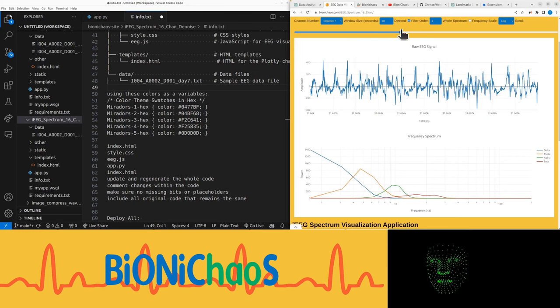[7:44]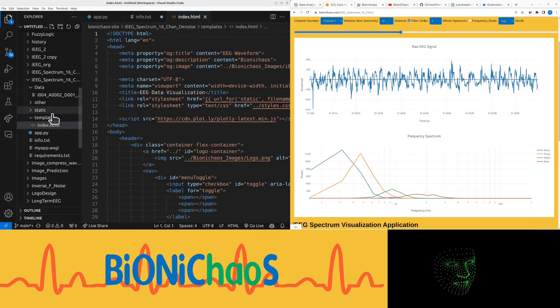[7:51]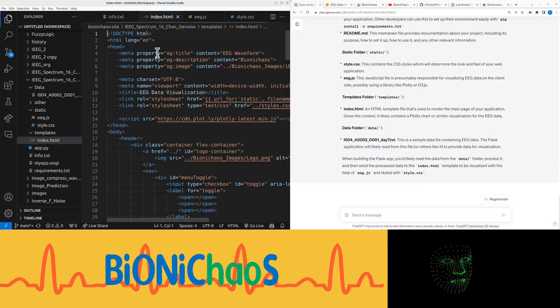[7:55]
Right, so we are obviously not ready to deploy anything because it will be at the moment the same as what we had for the previous tool. Let's run it locally just to see if it's working. Have the index for it, static, and the JavaScript. Let's pop in the HTML just so it has a context.
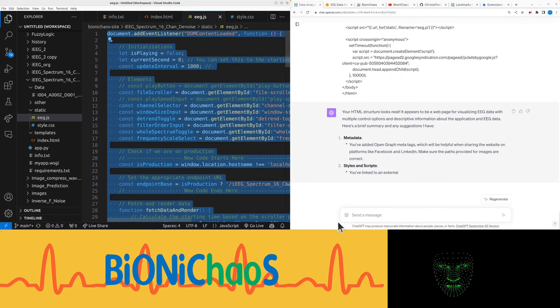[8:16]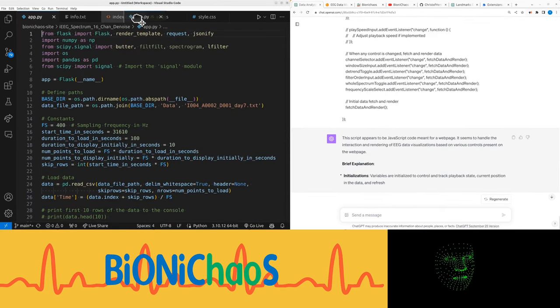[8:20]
Yeah, we don't actually need a summary. We can manage just for you for context. And then we have this JavaScript. Yeah, it's okay. We don't need to explain that as well. The most important thing is this Python code.
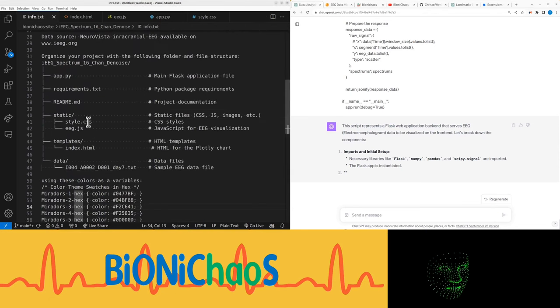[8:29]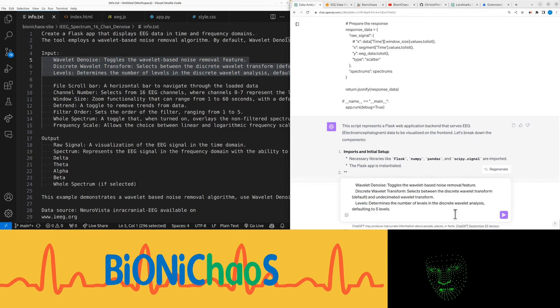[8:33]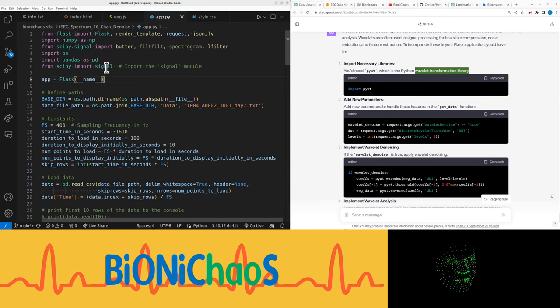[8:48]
Stop generating. And now the trick question. So we need these three to be added. Yep, new parameters. Yeah, you're getting it, you know what to do. This is a Python wavelet library. It's actually a confirm with GitHub Copilot.
Yep. Yeah, obviously suggesting the same thing. New parameters. Yeah, so we don't have them in the HTML code yet. Yeah, can you do that? So we're adding a new library. This is for wavelet analysis. We have those three variables, additional variables.
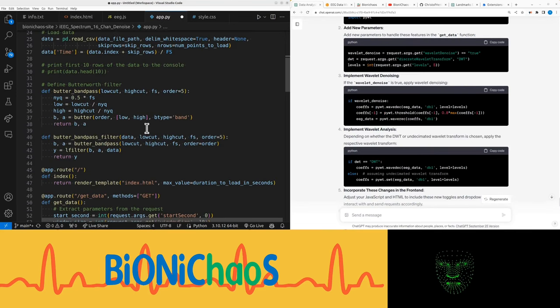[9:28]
Where shall we stick them? Do we normally put the variables next to the function? I don't know. Okay, in HTML. I don't like the fact that it didn't create a new function. Okay, in the form, this should be clearer. In wavelet settings, there's another form. Do we already have a form? And no. So this is an extra form. Now let's put it up top. Can we pop it in there?
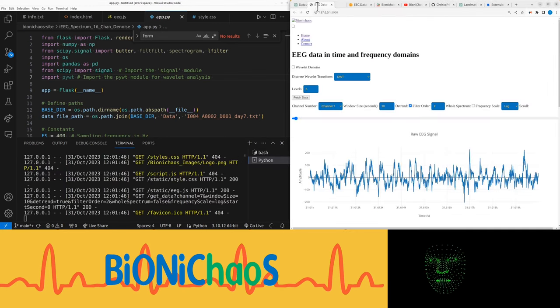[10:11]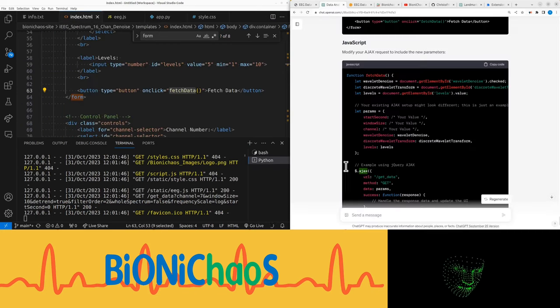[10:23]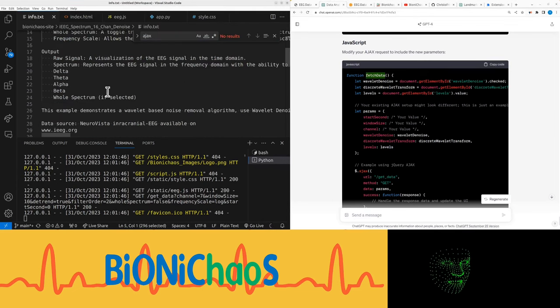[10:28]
Let's run this. So this will be in the local environment. So that's how the development thing will look like. Yeah, we have the wavelet denoise. Why do we need fetch data? Yeah, we're not using Ajax at the moment. Okay, so now the thing is, we need some sort of noise measurement thing, because we have a noise performance. Yeah, we'll like additional output like this. Right.
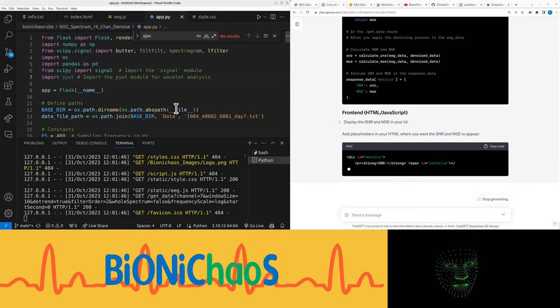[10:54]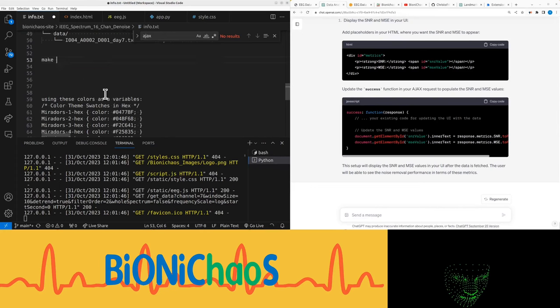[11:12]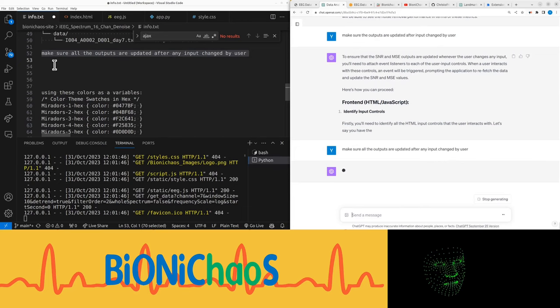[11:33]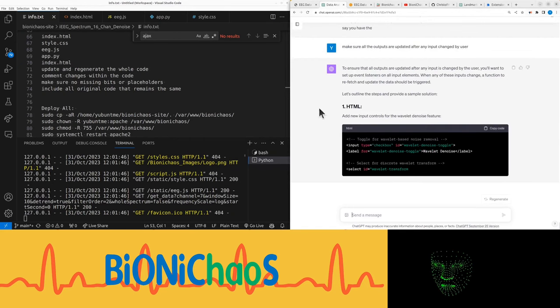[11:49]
Yeah, this is when GPT-4 becomes super slow. I don't know what it means, if it's just random or am I overloading it already. Right, we don't need the code yet. Can you, because it mentioned Ajax to capture user input, the current code I have is not using Ajax. Well, I don't know which one is better. So the index HTML can just regenerate the whole code.
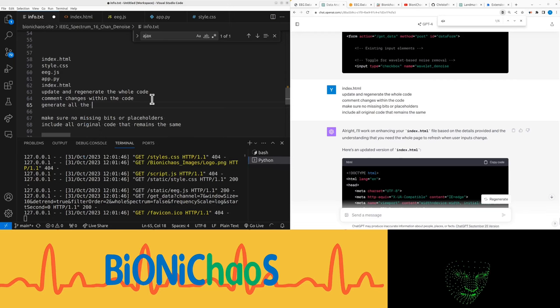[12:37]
Okay, it says a lot of missing stuff. Why? Okay, stop. What's the problem? No, how to make it update, regenerate the whole code, comment changes within the code, generate all the necessary script. So no, how to make it generate the whole thing. Oh, come on. No. It keeps ignoring me. Just it doesn't have the current code.
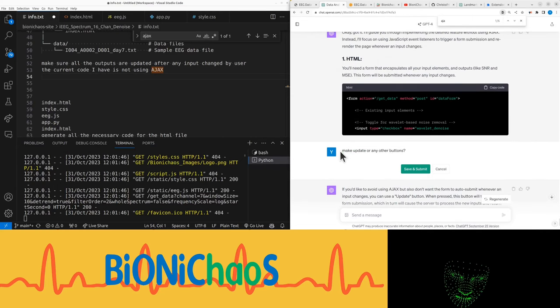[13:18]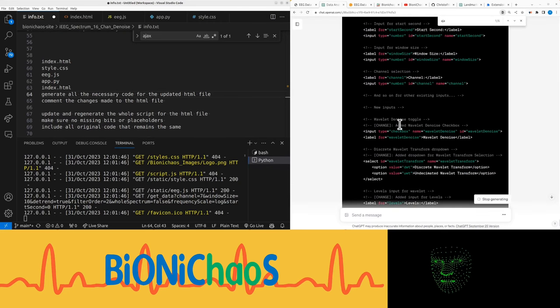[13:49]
I don't like the update buttons. Do we must have the update or any other buttons? What? Make sure no update or any other buttons are used. It'll stop generating updated HTML file, comment changes. Okay, now it's actually seemed to be generating the whole thing. Ah, no. Okay, we have those already, pretty sure.
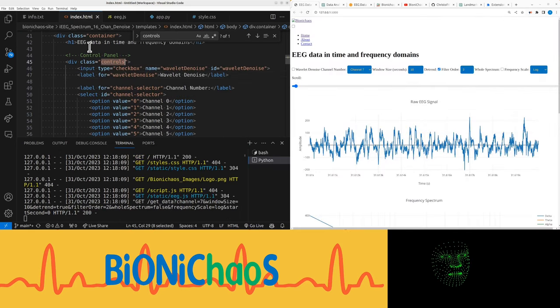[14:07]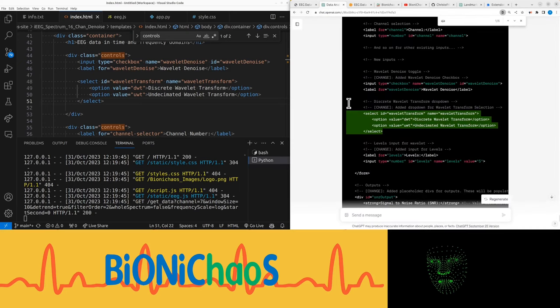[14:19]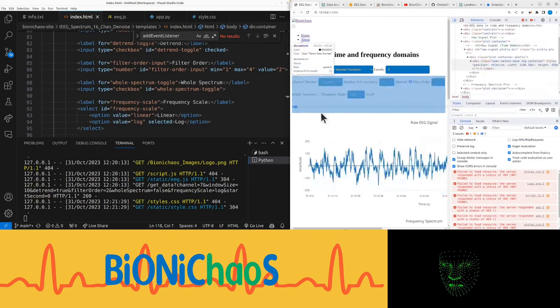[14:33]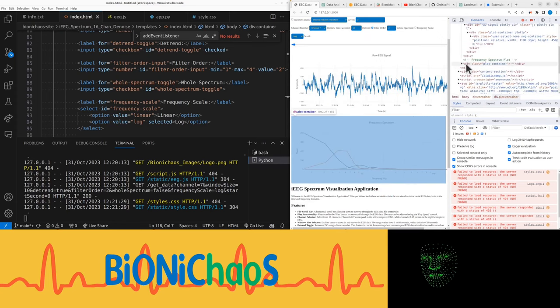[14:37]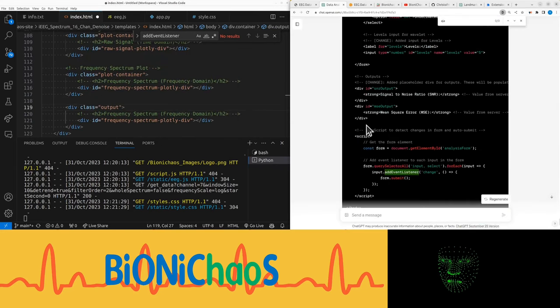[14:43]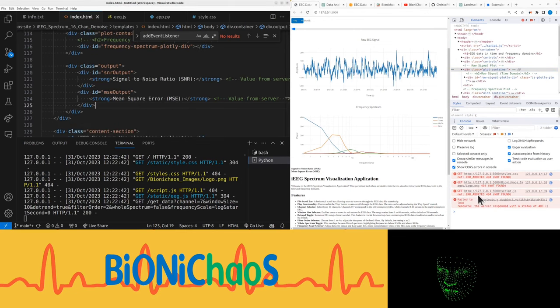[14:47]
Okay. A channel selector. Denoise checkbox. Can this be separated? Let's go into separate lines. Yes. Yeah, it's okay. Let it be a drop down. A number of levels. Should be in the JavaScript. There's another output though. Yeah, the problem with these two, the separate plot containers, output, this one will have these two logos. Okay, script.js is okay.
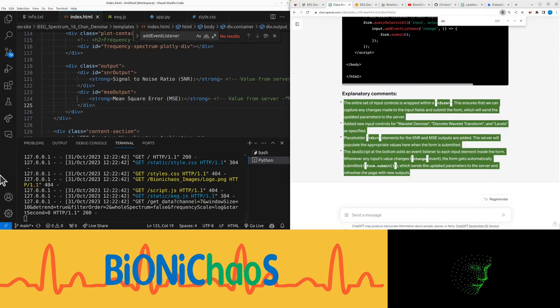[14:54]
The entire set of input controls is wrapped within a form tag. This ensures that we can capture any changes made to the input fields and submit the form, which will send the updated parameters to the server. Added new input controls for wavelet denoise, discrete wavelet transform, and levels as specified. Placeholder div elements for the SNR and MSE outputs are added. The server will populate the appropriate values here when the form is submitted. The JavaScript at the bottom adds an event listener to each input element inside the form. Whenever any input's value changes, change event, the form gets automatically submitted, form.submit, which sends the updated parameters to the server and refreshes the page with new outputs.
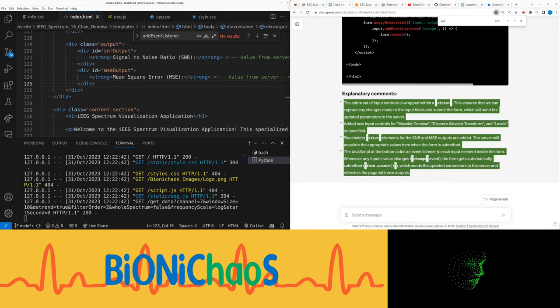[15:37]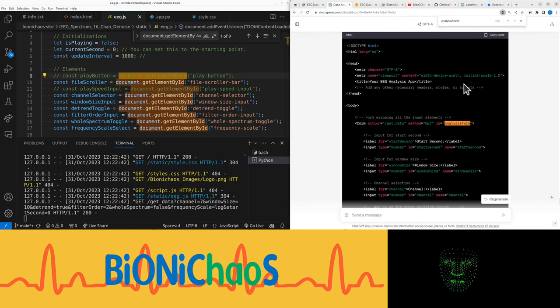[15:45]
Is this analysis for... Do I have to use it? So in the HTML, what form action? Why is it there? Yeah, don't like it. Well, mainly because we're not currently doing this.
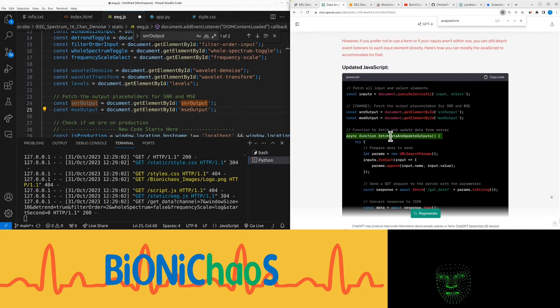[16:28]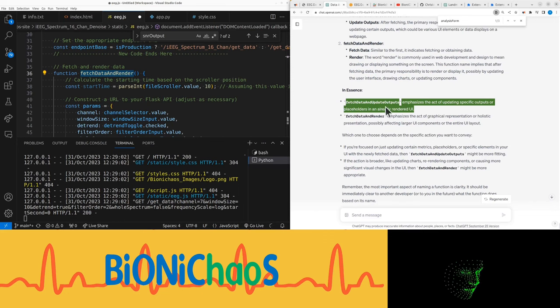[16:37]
Do we have to wrap all the input elements? Well, network errors to GPT-4 kind of gives you clues what's going to happen to this service. I think it's still going to go down, but I have to wait and see. And also not rely on it 100%. Give me like generic stuff.
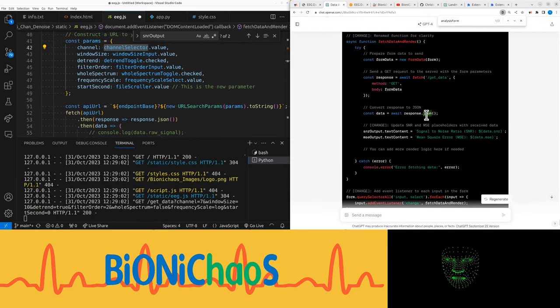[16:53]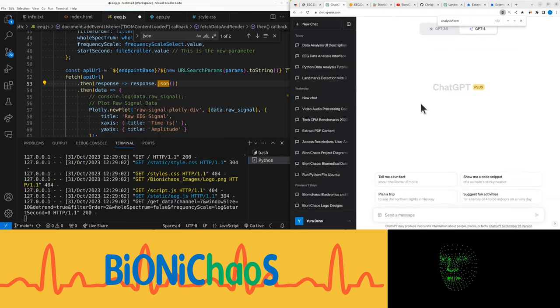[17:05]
Let's update the current function that we already have instead of adding a new one. Now we don't have the form anymore, remember? Are we converting to JSON? Don't think so. Oh yeah. Don't understand, why aren't you updating the current code? Do we need to start a new chat or something? Yeah, let's do a new one.
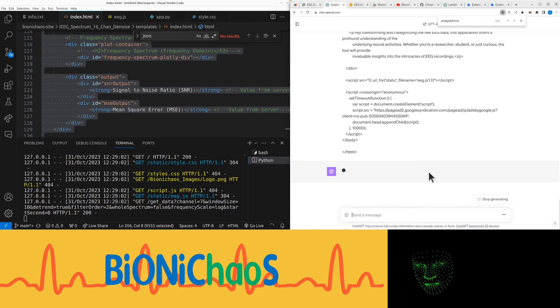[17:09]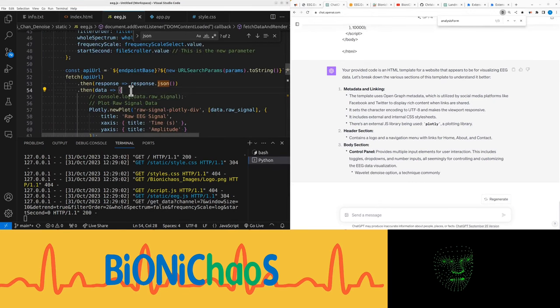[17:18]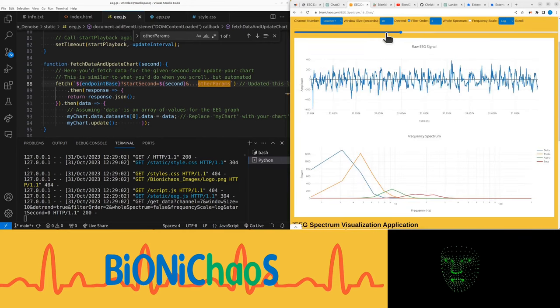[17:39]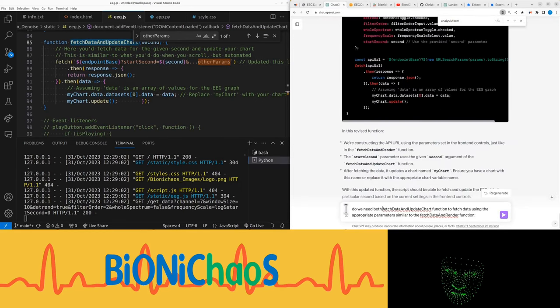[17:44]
So if we have this HTML, stop generating, then we have this JS. Will it pick up on what needs to be fixed? Ignore code related to play button. This needs to be replaced by updated with the actual parameters. Can you focus on this one? We had it in the previous code and it's working fine, so I'm not sure what's the deal. Do we need both fetch data and fetch and render?
So this seemed to be quite specific, which is good. And let's just create a copy of this quickly, just in case we stuff something up. Is this the complete thing? Endpoint base, that's right. Channel selector, window size, detrend, toggle, filter order, whole spectrum, frequency scale.
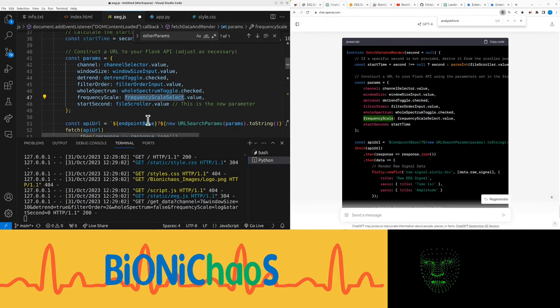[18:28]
Wait. Frequency. Okay, it's a bit weird. Alright, that's using that variable. This should be the same. Fetch API URL, response JSON, then data. We don't need logging there. Plotly newPlot in the stat. Stat playback function.
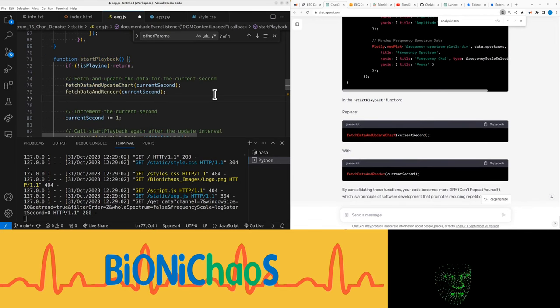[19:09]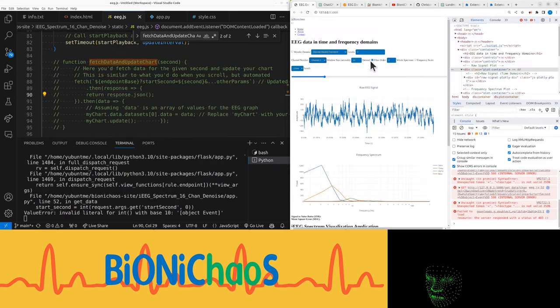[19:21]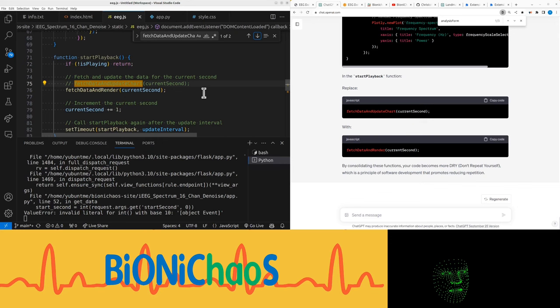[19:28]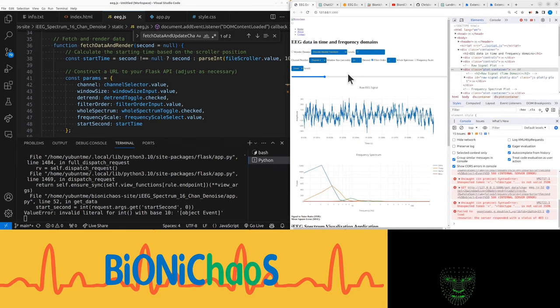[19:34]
Replace fetch update. Current second. Yeah, so we wanna only use the one function. So that can be commented out. eeg.js 52. Yeah, the playback is actually not there. And let's restart just to make sure everything's working. Now that's working okay.
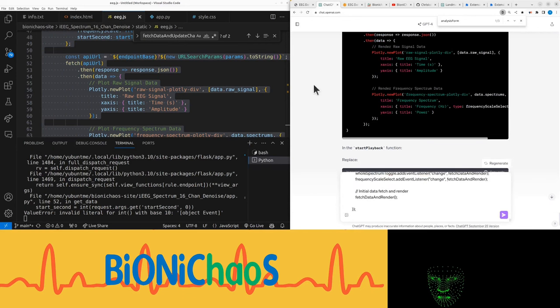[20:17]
Wait, let's clear this for a sec, clear console. It's not a JSON. JavaScript 54. Just pop the whole thing in with the errors. See what it says.
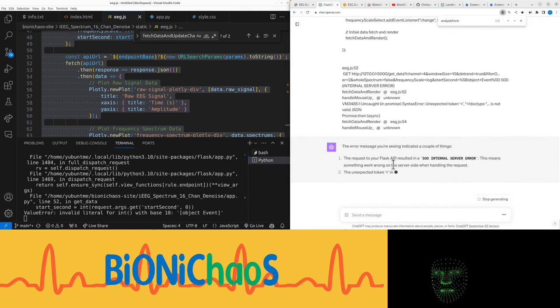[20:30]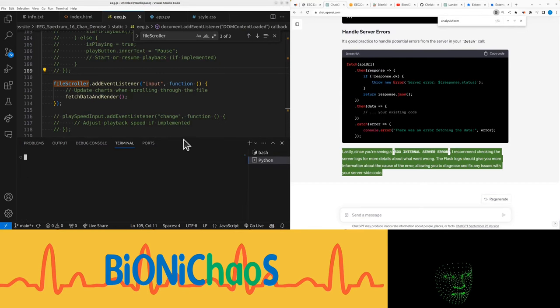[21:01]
The value of start second in the URL is %5B object plus event %5D, which URL decodes to object event. This suggests that the event object itself is mistakenly being passed as the value for the start second parameter, rather than the actual value you want. This event listener input function. Ensure that when you're calling fetch data and render from an event listener, you're not accidentally passing the event object. If you intended to pass a value from the event to fetch data and render, okay, let's clear this for a sec.
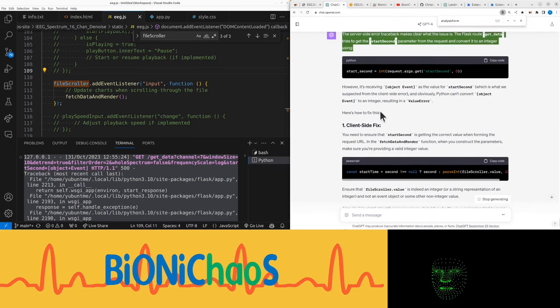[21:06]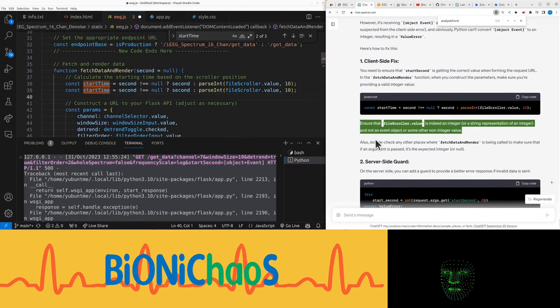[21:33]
The server-side error traceback makes clear what the issue is. The Flask route get_data tries to get the start second parameter from a request and convert it to an integer, however, it's receiving object event as the value for start second, which is what we suspected from the client-side error. And obviously, Python can't convert object event to an integer. To ensure that start second is getting the correct value when forming the request URL, in the fetch data and render function, when you construct the parameters, make sure you're providing a valid integer value. This is the same. Ensure that file scroller value is indeed an integer or a string representation of an integer and not an event object or some other non-integer value. Yeah, we put in now. It should in theory start in the beginning of the file.
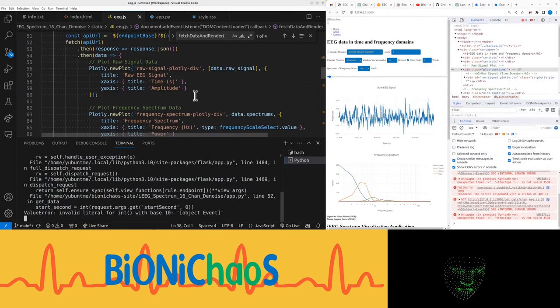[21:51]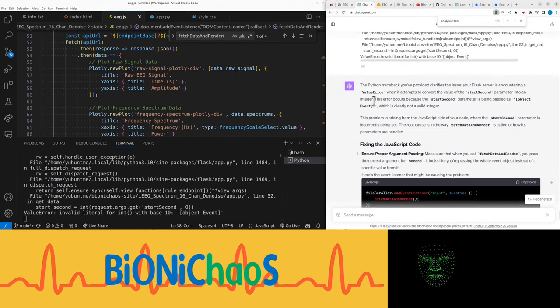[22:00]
Okay, I'm not having much luck today. Regenerate that last response. The Python traceback you've provided clarifies the issue. Your Flask server is encountering a value error when it attempts to convert the value of the start second parameter into an integer. This error occurs because the start second parameter is being passed as object event, which is clearly not a valid integer. This problem is arising from the JavaScript side of your code, where the start second parameter is incorrectly being set. The root cause is in the way fetch data and render is called or how its parameters are handled. Fixing the JavaScript code ensures proper argument passing. Make sure that when you call fetch data and render, you pass the correct argument for second.
It looks like you're passing the whole event object instead of a specific value from it. Here's the event listener that might be causing the problem. JavaScript: fileScroller.addEventListener('input', function() { fetchDataAndRender(); });
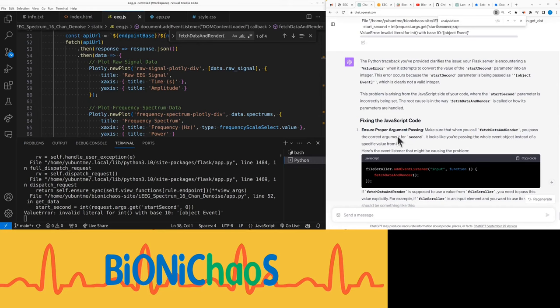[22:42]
If fetchDataAndRender is supposed to use a value from fileScroller, you need to pass this value explicitly. For example, if fileScroller is an input element and you want to use its value, it should be something like this. JavaScript: fileScroller.addEventListener('input', function() { const second = parseInt(fileScroller.value, 10); fetchDataAndRender(second); }); Adjust the logic according to what fileScroller is and what value you need from it.
Debugging. If you're still facing issues, add console logs to debug. For example, JavaScript: function fetchDataAndRender(second = null) { console.log('fetchDataAndRender called with second:', second); // Rest of your code }. This will help you to verify that the function is receiving the correct parameter.
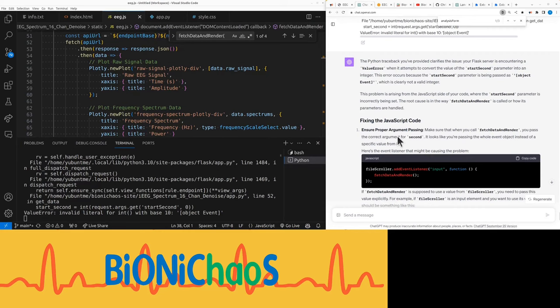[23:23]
Validate on Flask side. As an additional safeguard, you might want to add validation on the Flask side to handle any unexpected parameter values gracefully. For example, Python: @app.route('/get_data') def get_data(): try: start_second = int(request.args.get('startSecond', 0)) except ValueError: start_second = 0 # or handle this scenario as you see fit # Rest of your function. By ensuring that the correct value is passed from the JavaScript front end and adding some safeguards on the Python back end, you should be able to resolve this error.
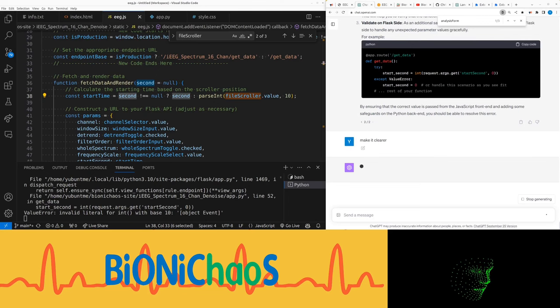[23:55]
I don't actually understand, can you make it clearer? So what the problem is? Your Flask backend is throwing an error because it's receiving the string "[object Event]" instead of a valid integer for the start_second parameter. Okay. What's the solution? Ensure that you're passing the correct value for the second parameter to fetchDataAndRender.
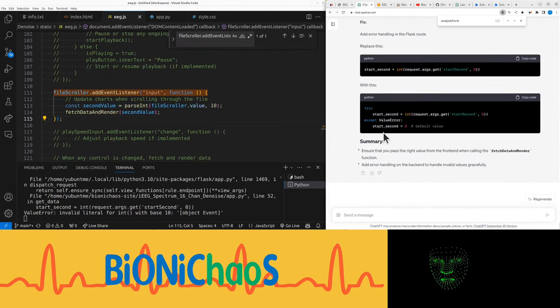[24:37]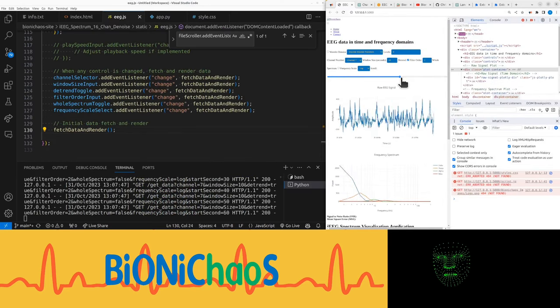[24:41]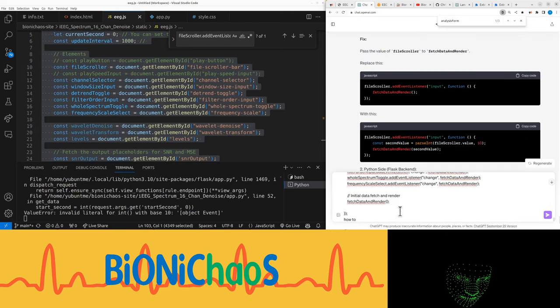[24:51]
It doesn't have a second parameter. It only has one parameter. When you call fetchDataAndRender inside the fileScroller event listener, you're not passing any argument, which results in the function receiving the event object itself as the second parameter. Okay, I'm not passing any parameter, I mean. No, I don't want to change the Python code. That's working okay. I'm changing to fix.
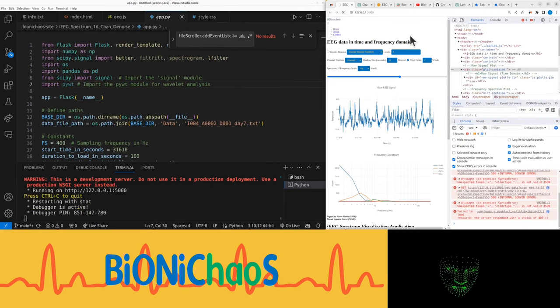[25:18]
You've already implemented the recommended change in the JavaScript to address the issue of passing the event object to the fetchDataAndRender function. Specifically, you updated the fileScroller event listener to pass the scroller's value correctly. However, to ensure full robustness and avoid potential issues in the future, I'd recommend a few additional changes. Well, first of all, I'm still getting errors. Let's restart the application.
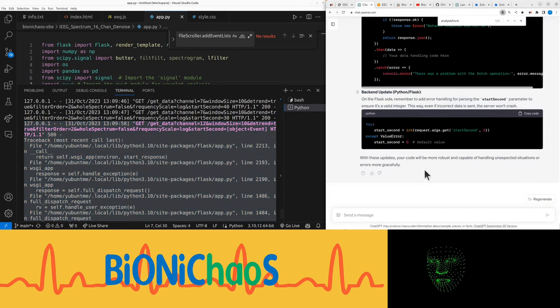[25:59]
It should be running okay the first time around. The file scroller is working well. The frequency spectrum is updating okay. Now, the problem is those other controls; I do not expect those to work yet. They're not actually connected anywhere. Let's say when changing the channel number, I get this error. That's not cool. So I'm getting a 500 response. How do we fix it?
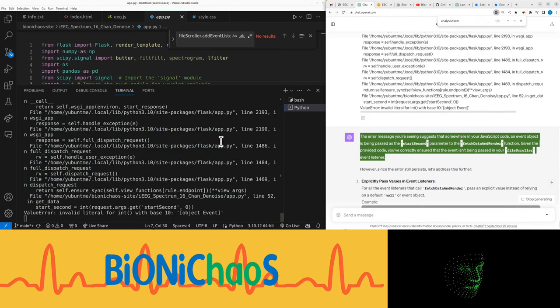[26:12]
I'm still getting the error, because we combined two functions together that weren't actually meant to be there. The error message you're seeing suggests that somewhere in your JavaScript code, an event object is being passed as the start_second parameter to the fetchDataAndRender function. Given the provided code, you've correctly ensured that the event isn't being passed in your fileScroller event listener. Okay, so what's the problem? For all the event listeners that call fetchDataAndRender, pass an explicit value instead of relying on a default null or event object.
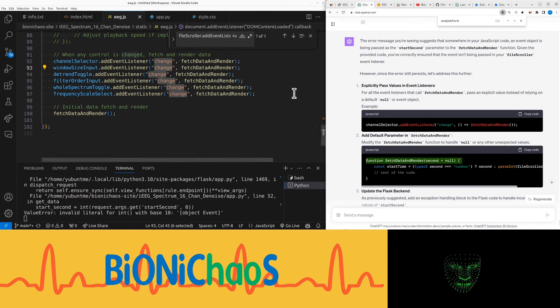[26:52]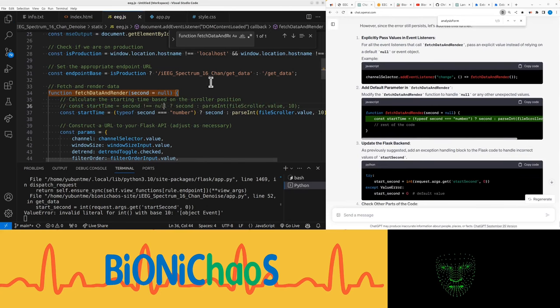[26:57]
Right, so the problem would be with this last call, is it? Right, so I need to change all of those. Add a default parameter in fetchDataAndRender. Right, or just add a default. Okay. Modify the fetchDataAndRender function to handle null or any other unexpected values. So this should resolve any issues. Yeah, we don't want to change the Python code because I know it's been working. Right, well, now it's working okay. Yeah, so it's the default value for the fetchDataAndRender function.
Those are okay. It's trying to put in Google Ads and things in non-production code.
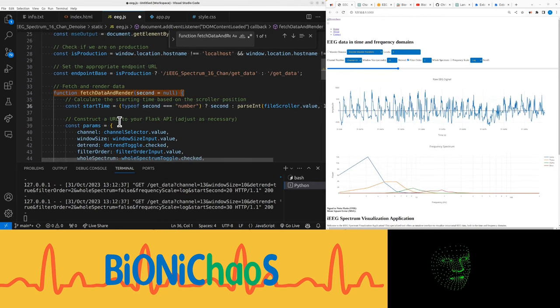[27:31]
Right, so that helped. Detrend just makes sure the signal is centered around zero, because sometimes it's not making much change, but it is still working. Yeah, this is overlaying the whole spectrum. In production, it will look a bit better like this.
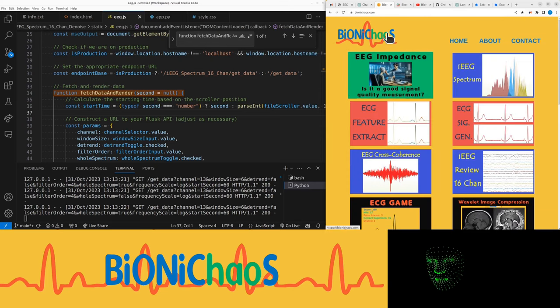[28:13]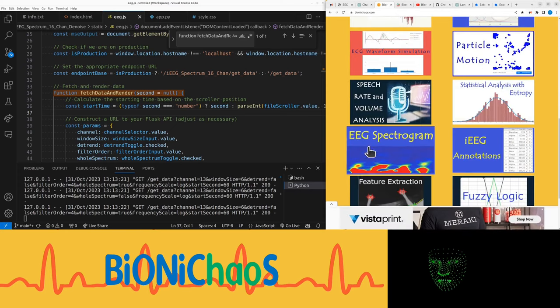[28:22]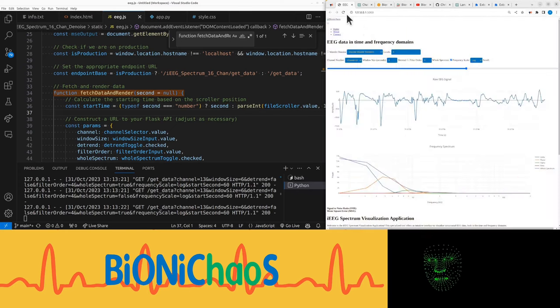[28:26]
So this is the previous tool we have over here. And currently working on this one, the EEG noise removal, which will look the same, but you will have this extra wavelet denoise function where you can select discrete wavelet transform or undecimated and select the number of levels. This data has a seizure in it, this EEG.
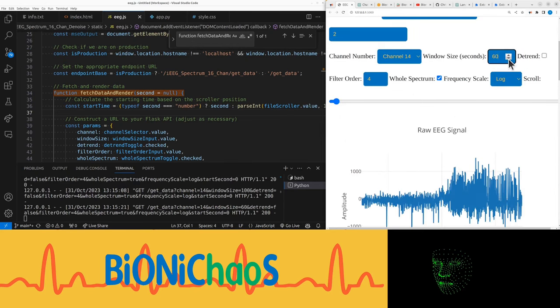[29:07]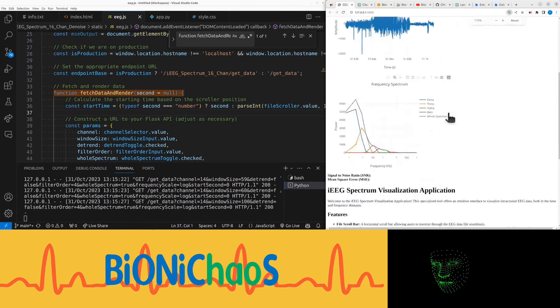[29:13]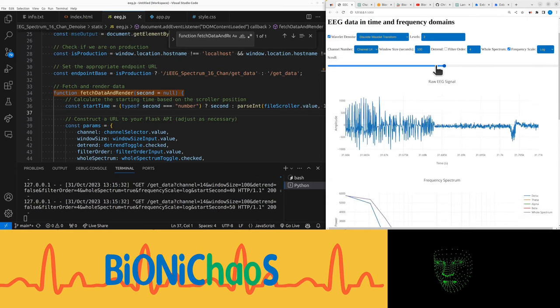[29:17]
I think it's mainly coming from one side of the brain rather than the other. Yeah, this will max out at 60, so I'm not even sure why, oh, those tiny bits are so annoying. So you can manually add the, it's actually quite surprising, yeah, so this is the whole seizure. No, something is wrong.
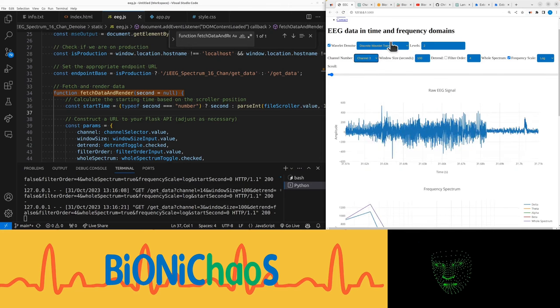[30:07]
No, so it's coming from, because we have 8 channels on one side of the brain and 8 channels on the other side of the brain. So the seizure is actually starting, I think, on the left, 0 to 7. And then 7 to 15 would be the right, where the seizure is essentially more visible later. It's what used to be called secondary generalized, where the seizure starts locally and then spreads throughout the brain.
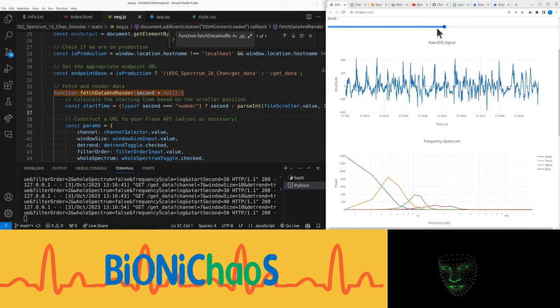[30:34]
So by default, if I restart the page to the default values, so this is the epicenter. Yes, I'm not joking. There were some papers, some attempts to compare seizures to what are called earthquakes. And yes, it's a bit like an earthquake in the brain.
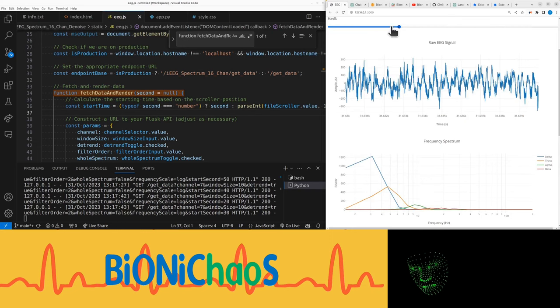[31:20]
So in this case, comparing your baseline, so after the seizure, the delta to theta ratio could be handy, because currently it's about, was it a third? And during the seizure, in some places, it's almost a 1-to-1 ratio. So there's higher power in the higher frequency components. That's not always the case, so I have to be careful of these things.
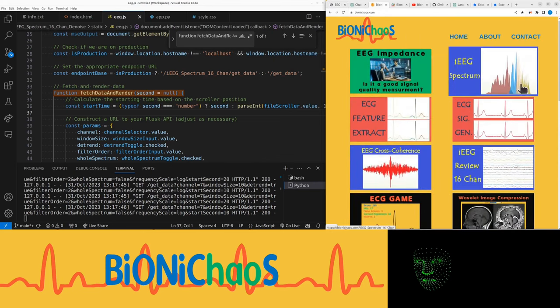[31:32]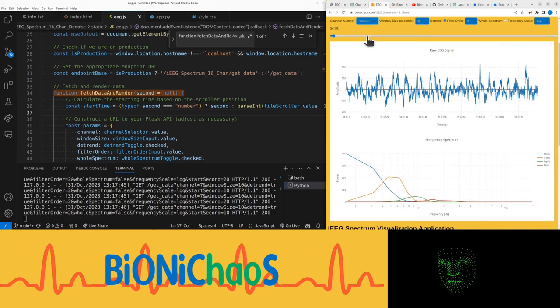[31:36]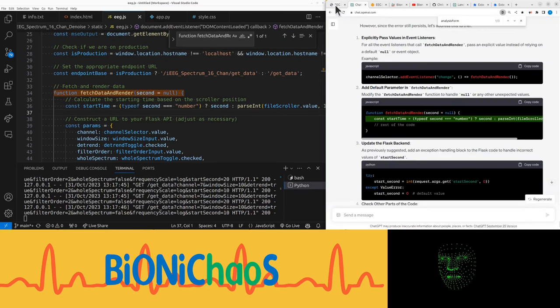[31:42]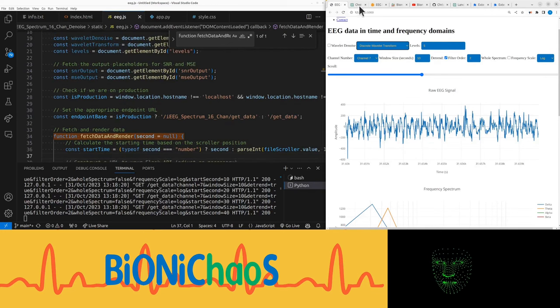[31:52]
Anyway, this tool is available on the page. You can go check it out. Let me know what you think, what I can improve, any questions, suggestions, comments, requests. Right, let's get back to this, because we're trying to add the wavelet denoising functions. I think we're almost there.
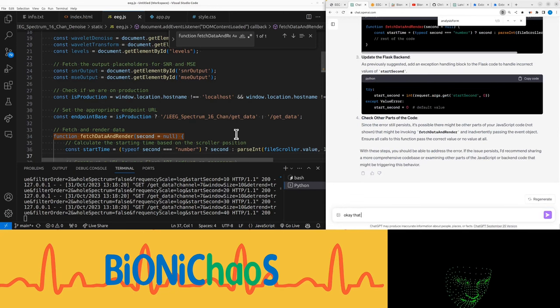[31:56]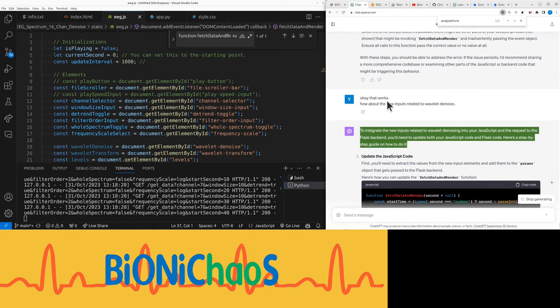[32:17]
Okay, that works. How about the new inputs related to wavelet denoise? Okay, let's start from here. But let's see what the bot has got to say. To integrate the new inputs related to wavelet denoising into your JavaScript and the request to the Flask backend, you need to update both your JavaScript code and Flask code. Here's a step-by-step guide on how to do it.
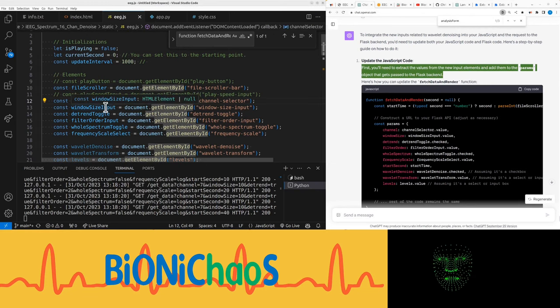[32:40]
Okay, that's great, so you understand the context. First, you'll need to extract the values from the new input elements and add them to the params object that gets passed to the Flask backend. Right. So in the fetch data and render function, we need to add extra parameters as such. Next, add event listeners for these new elements. Right, we need a comma there. Yeah, we don't want to be tripped over little things. So where are our current event listeners? Okay, we're adding more here.
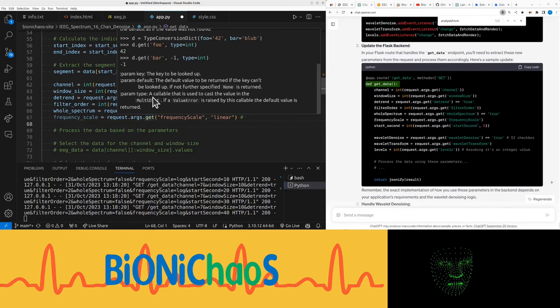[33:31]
Now, in the Python. In your Flask route that handles the get_data endpoint, you need to extract these new parameters from the request and process them accordingly. Here's a sample update. Yeah, I don't like sample. Sample means it's not the whole code. I'm not using the frequency scale. Why? And why is this defaulting to linear? Default value to be returned if the key can't be looked up. No, this actually should be what the
Is GitHub Copilot doing anything at all? Is it called log? Don't think so. I know it is called log. Okay, so the default should be log. This parameter is not actually being used, so. Right, anyway, we need to add these three and process the data.
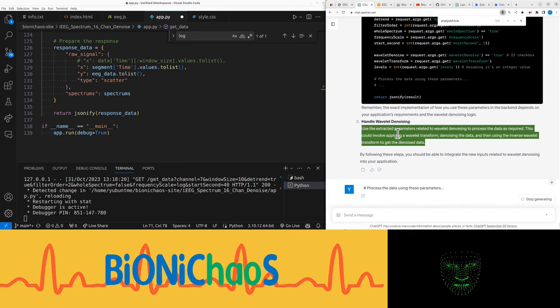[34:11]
Let's see some comments. Remember, the exact implementation of how you use these parameters in the backend depends on your application's requirements and the wavelet denoising logic. Use the extracted parameters related to wavelet denoising to process the data as required. Yep. This could involve applying a wavelet transform, denoising the data, and then using the inverse wavelet transform to get the denoised data. Sounds good. Okay, we're ready.
Installed. Wait, what did we just... All right, no, that's okay. Let's save that. What's the difference between PYWT versus PyWavelets? Both PYWT and PyWavelets refer to the same library. Right. PyWavelets is the name of the project, and PYWT is the name of the Python module you import when you're using the library in your code.
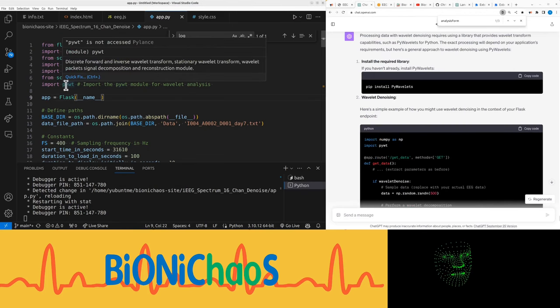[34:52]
Okay, so you made a mistake there. Ah, no. Okay. And I already have it installed. Well, first, it's not indicating an error. The error there is that it's not being used, but I'm pretty sure I have it installed already.
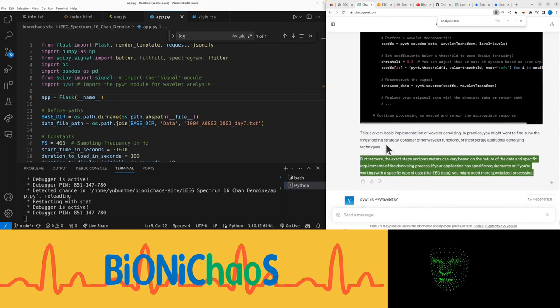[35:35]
Here's a simple example of how you might use wavelet denoising in the context of your Flask endpoint. Okay, this is very basic. It's missing a lot of code. This is a very basic implementation of wavelet denoising. In practice, you might want to fine-tune the thresholding strategy, consider other wavelet functions, or incorporate additional denoising techniques. Furthermore, the exact steps and parameters can vary based on the nature of the data and specific requirements of the denoising process. If your application has specific requirements, or if you're working with a specific type of data, like EEG data, you might need more specialized processing.
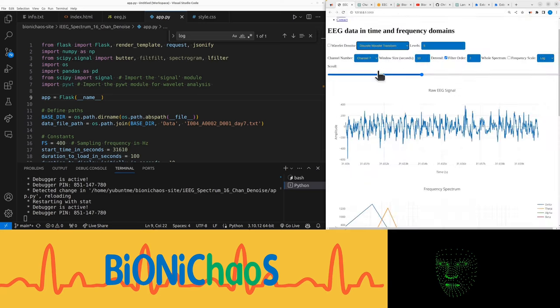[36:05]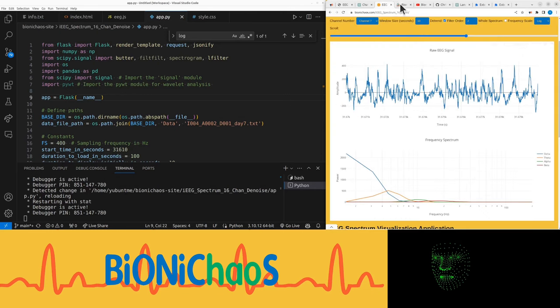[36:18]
Right. Well, first of all, that's why we have the input parameters, so you can change and play with it and see what difference it makes. Let's see. This simple example is okay. Make sure the input values from the HTML form are being used. So we have three of them. Wavelet denoise on and off. An option between discrete and non-discrete, undecimated. And the number of levels, which is the number of levels in the discrete wavelet analysis.
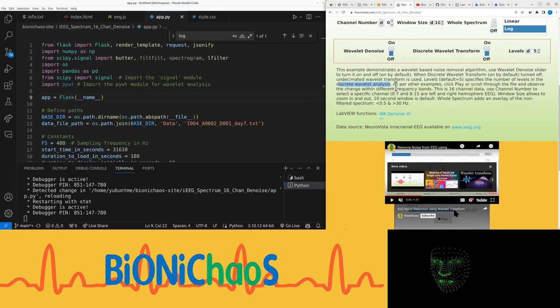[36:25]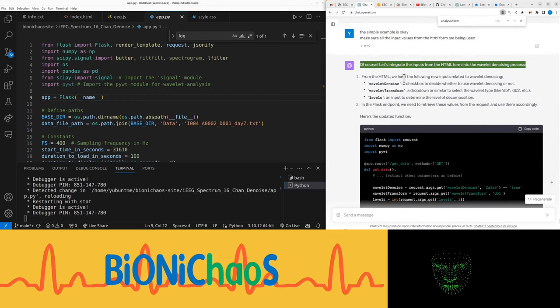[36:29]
Yeah, we need more context for that. Okay, so we're integrating something. Of course. Let's integrate the inputs from the HTML form into the wavelet denoising process. Yeah, that's what I just said. We have wavelet denoise, a checkbox to decide whether to use wavelet denoising or not. And this one as well. Wavelet transform, a drop-down or similar to select the wavelet type, like DB1, DB2, etc.
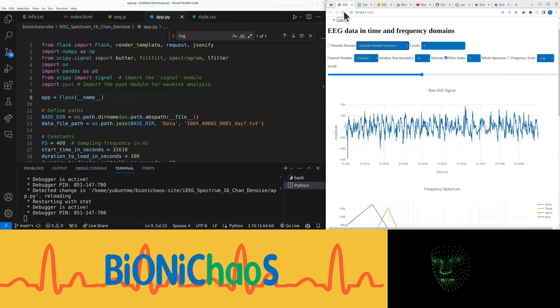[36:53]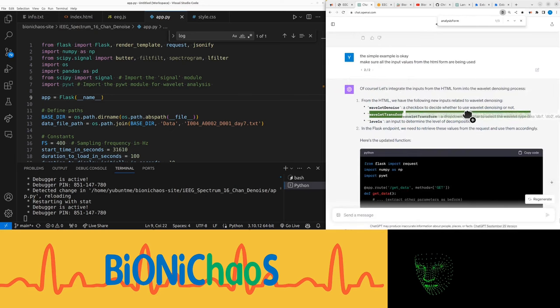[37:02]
Right, so this should have more input in it. That would be nice, actually, to have different types of wavelets selected. Levels, an input to determine the level of decomposition. And that sounds legit. In the Flask endpoint, we need to retrieve these values from the request and use them accordingly. Okay, so we're already doing that.
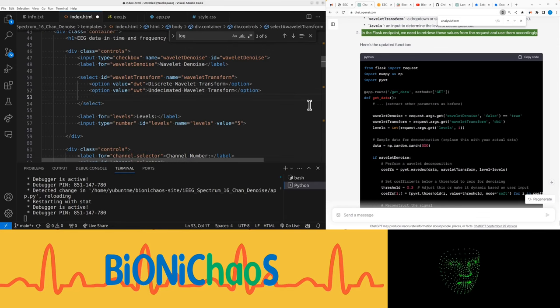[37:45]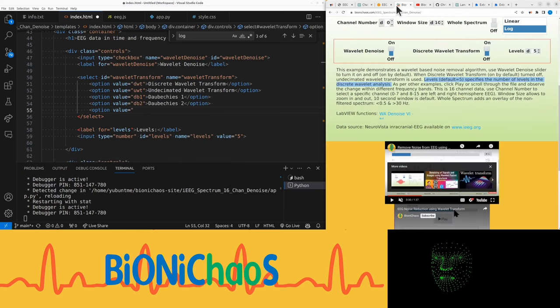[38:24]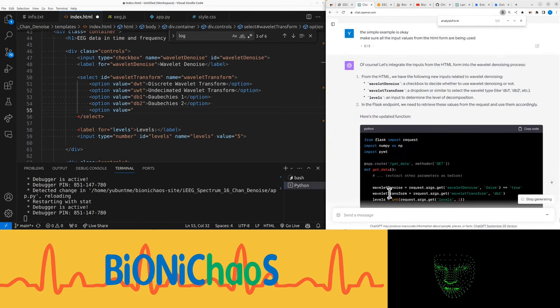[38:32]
Yeah, we don't have DB1 in the HTML. Levels. Can we add more options? I like DB1. DB2. Okay, maybe something else. Let's check. Can you give us this one? More wavelet types. Yeah, give me some other ones.
Terms DB1, DB2, and so on refer to Daubechies wavelets. In wavelet analysis, the Daubechies wavelets are a family of orthogonal wavelets characterized by a maximal number of vanishing moments for some given support. In simpler terms, the wavelets have properties that make them useful for signal compression and noise reduction. Yeah, how about other types of wavelets used for EEG?
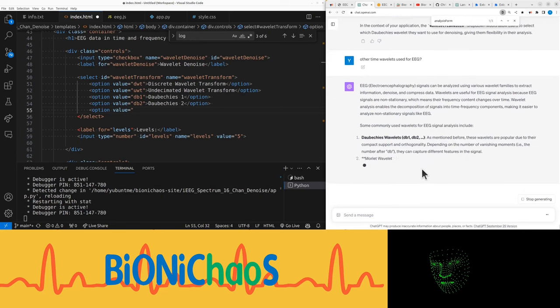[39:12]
Yeah, I know what the EEG is. Yeah, more. Yeah, that sounds good. Okay, so we have those. DB1, DB2 should be enough.
As mentioned before, these wavelets are popular due to their compact support and orthogonality. Depending on the number of vanishing moments, i.e., the number after db, they can capture different features, and this is particularly popular in time frequency analysis of EEG signals. It offers a good balance between time and frequency localization, making it suitable for analyzing oscillatory activities in the EEG. Yeah, setting a Mexican hat.
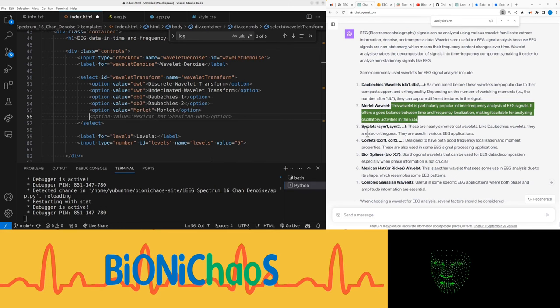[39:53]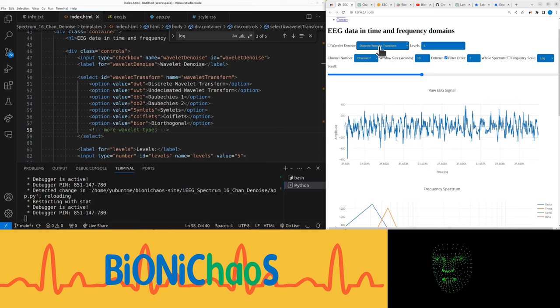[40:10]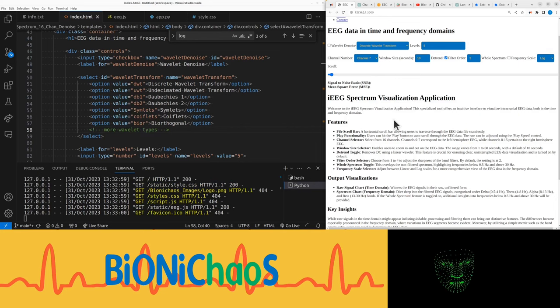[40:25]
That should be plenty more wavelet types. Okay, let's refresh this page. Where are the charts? JSON.
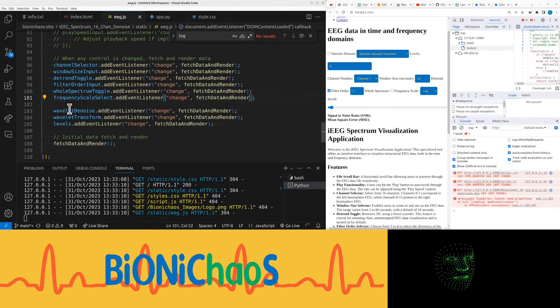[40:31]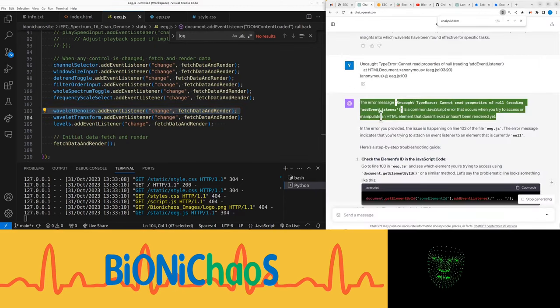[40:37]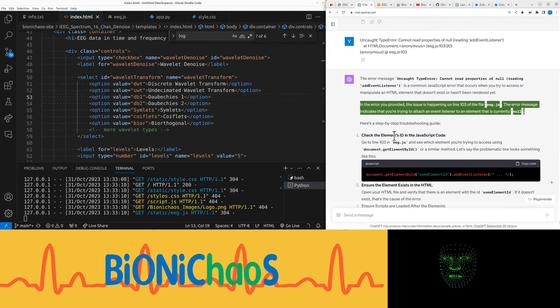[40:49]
103. What's the problem? The error message "Uncaught TypeError: Cannot read properties of null, reading addEventListener" is a common JavaScript error that occurs when you try to access or manipulate an HTML element that doesn't exist or hasn't been rendered yet. In the error you provided, the issue is happening on line 103 of the file EEG.js. The error message indicates that you're trying to attach an event listener to an element that is currently null.
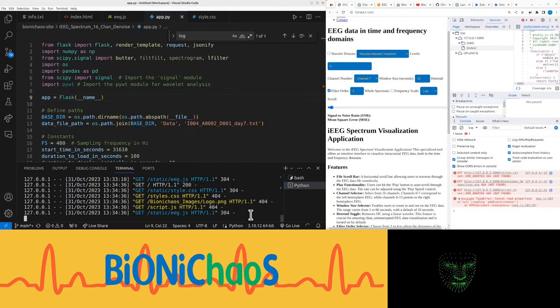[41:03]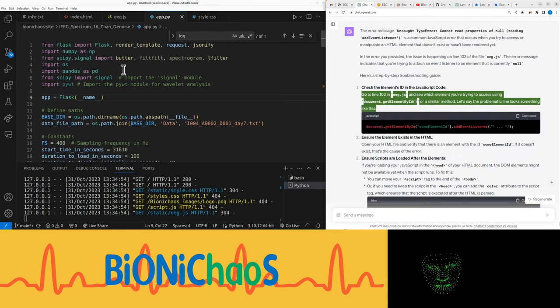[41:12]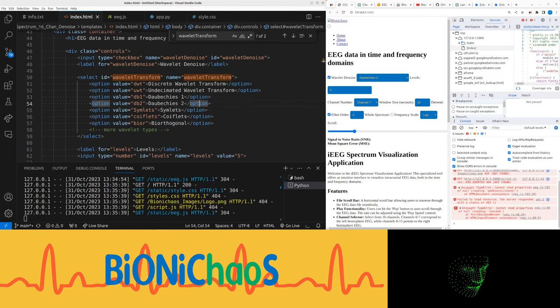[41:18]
As of now, there's a value. Stop the app for a sec. Start it again. Check the element ID. The element ID, I didn't change the element ID. My microphone's playing up.
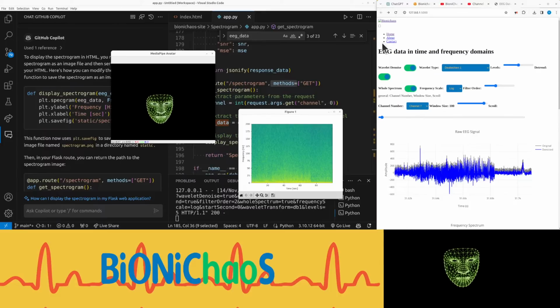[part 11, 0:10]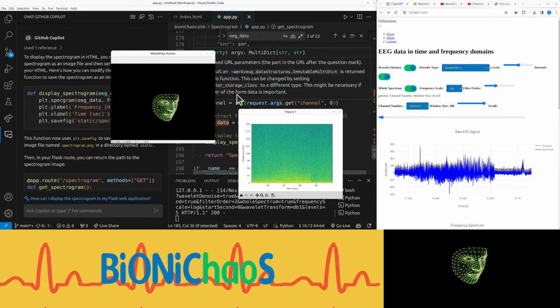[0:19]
Hello, hopefully the microphone is working okay. Jump straight into it.
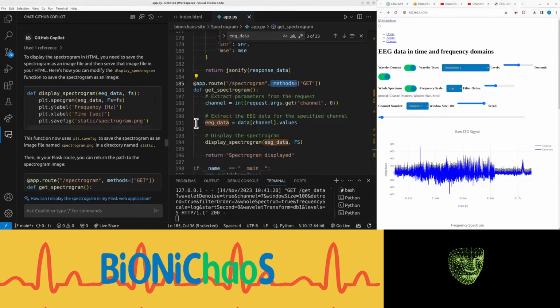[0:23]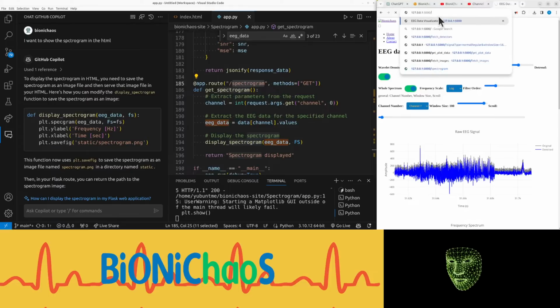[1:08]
So GitHub Copilot made this frequency spectrogram view for us. The problem with it is that it's only accessible by a different URL, so not within the same window. So I actually have to go to where the URL is /spectrogram.
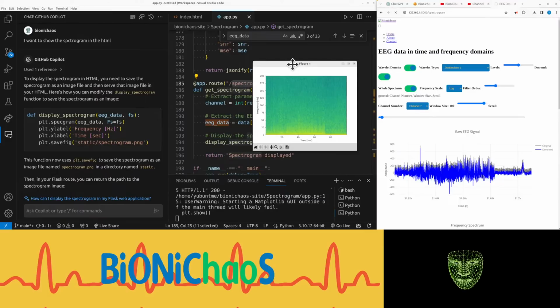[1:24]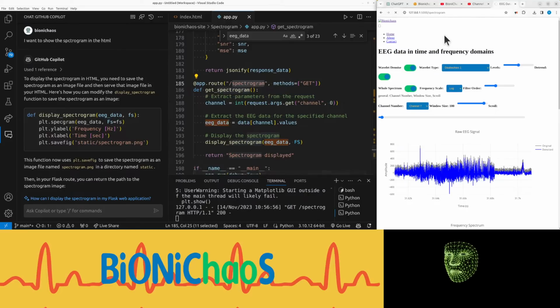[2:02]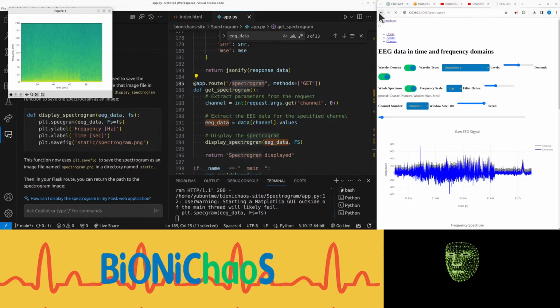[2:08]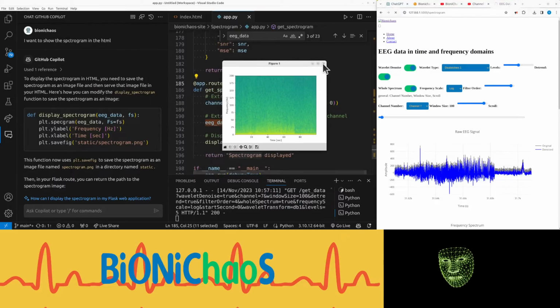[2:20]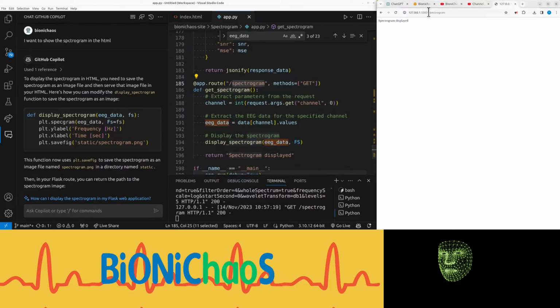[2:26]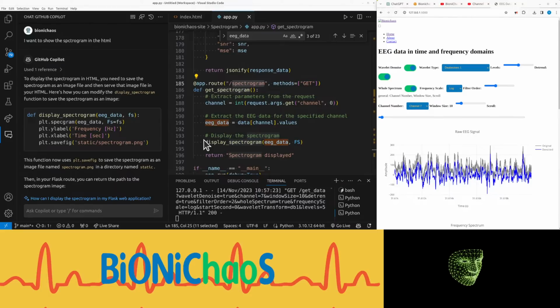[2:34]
Right, so that's how it's loading. Yes, those inputs do not take effect over the spectrogram. Okay, another option.
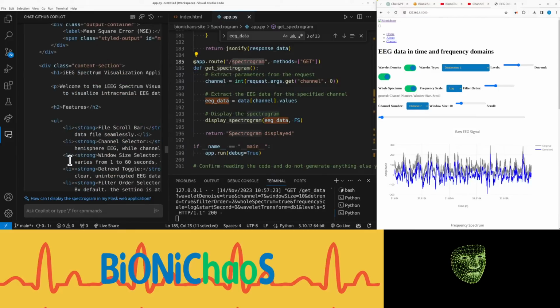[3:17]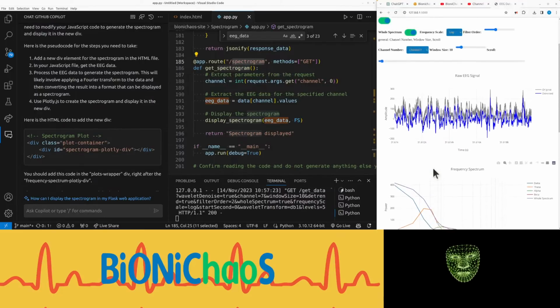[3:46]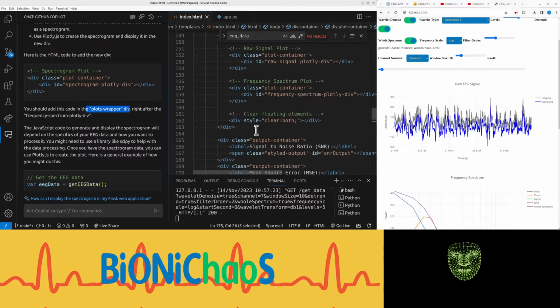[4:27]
Okay, so we want to show the spectrum in the HTML. So in the HTML, we should have a spectrogram Plotly container. In the plots wrapper, why do we have it twice? There's something wrong with that.
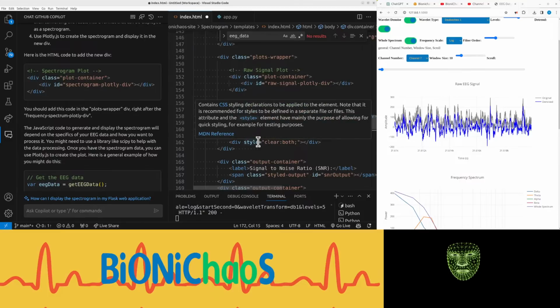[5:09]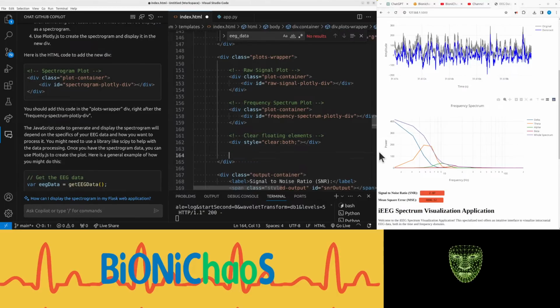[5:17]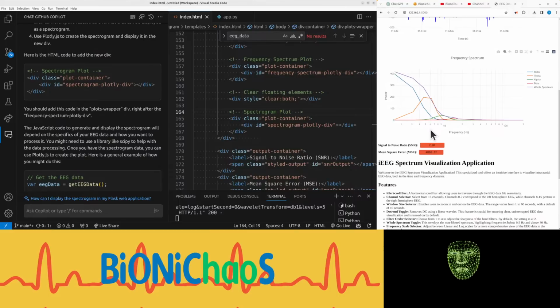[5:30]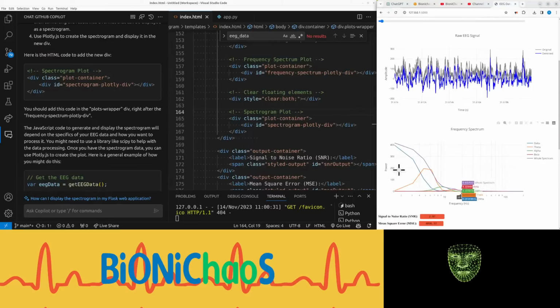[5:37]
Plots wrapper, plot container. We have the raw signal, the frequency spectrum. They have the output container. Okay, this is the wrong place for it. We want it over here somewhere. And we need to refresh this page. Okay, I don't know what that is. We'll sort it out later.
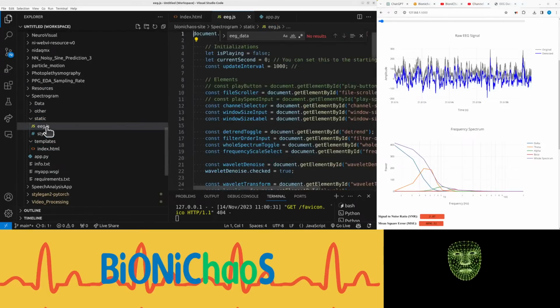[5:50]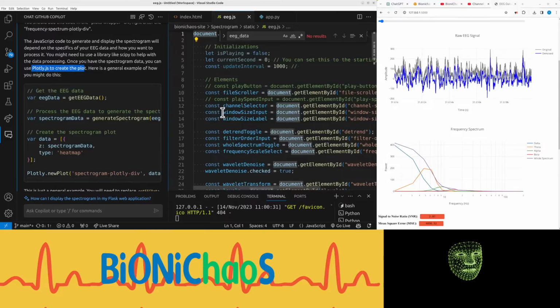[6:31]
Now in JavaScript code, to generate and display the spectrogram, it depends on the specifics of your EEG. How do you want to process it? Might need to use a library like SciPy. Once you have the spectrum data, you can use plotly.js to create the plot. Here's the general example of how to do it. We have a get data. We have a fetch data and render.
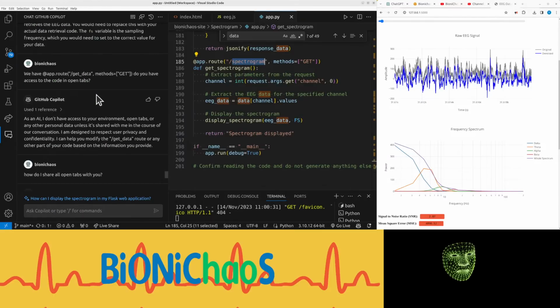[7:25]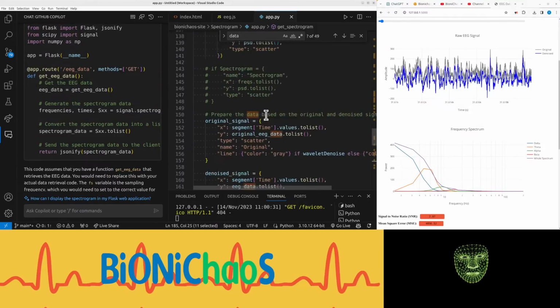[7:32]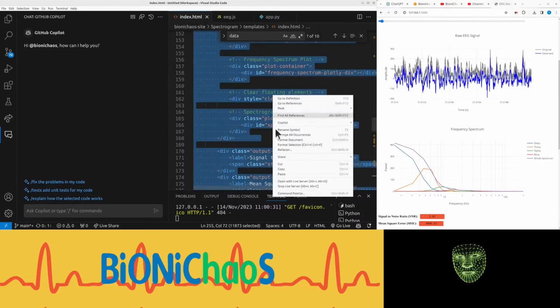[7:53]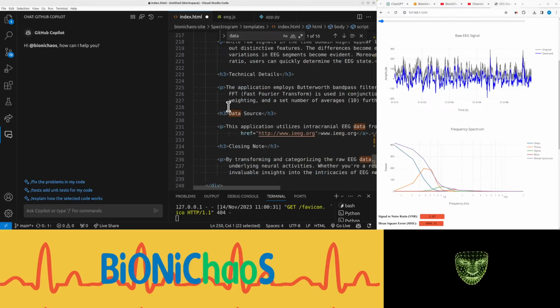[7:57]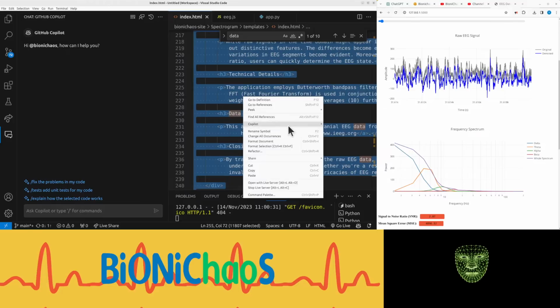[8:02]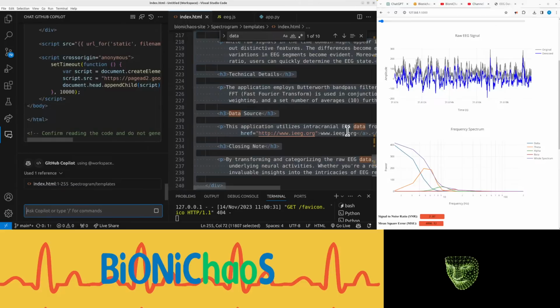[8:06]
Okay, this is actually changing. Okay, so instead of a separate window, still using a get data. Okay, let's clear this up. Sounds like I need to explain the file first. So it actually goes so that GitHub Copilot has access to it.
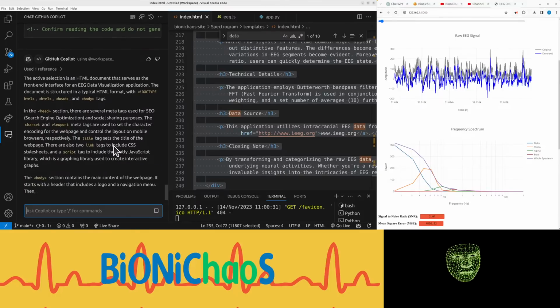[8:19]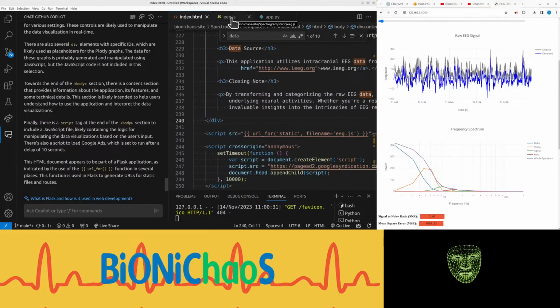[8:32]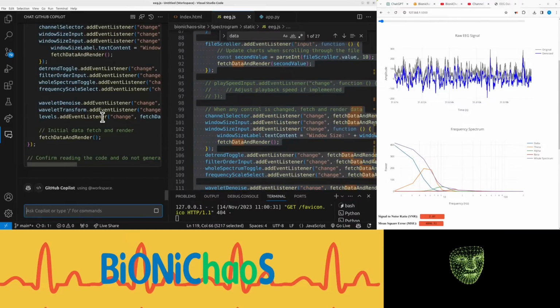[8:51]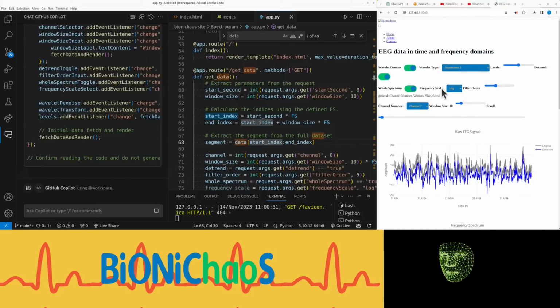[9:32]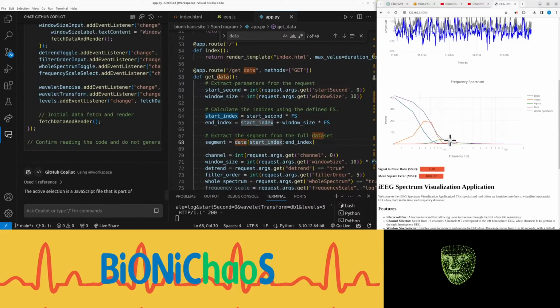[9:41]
Okay, then we have the JavaScript. Copilot, explain this. This is mainly so that Copilot has access to the files. We can ask something in line, but wouldn't even know where to start. Okay, so it's generating stuff. So what we want really is to have an option to replace the spectrum by a spectrogram, which is much more detailed. Essentially a two-dimensional thing.
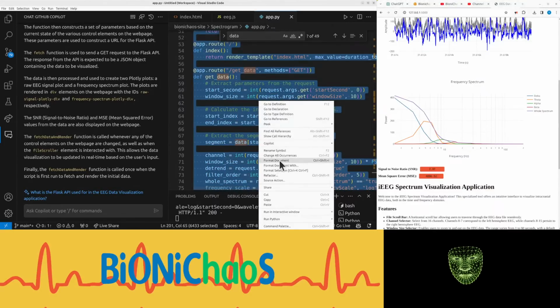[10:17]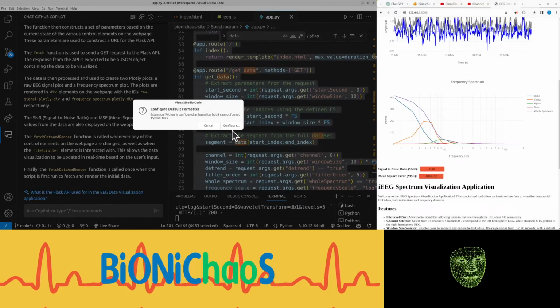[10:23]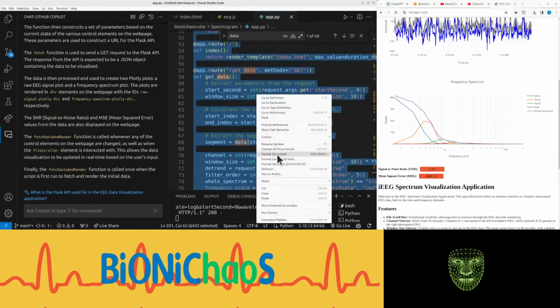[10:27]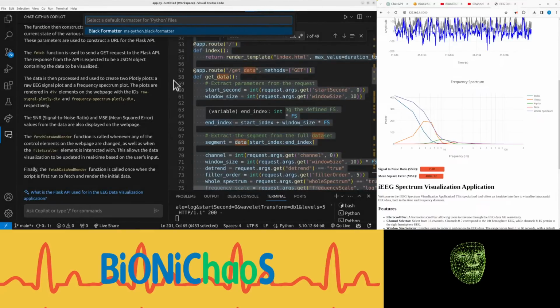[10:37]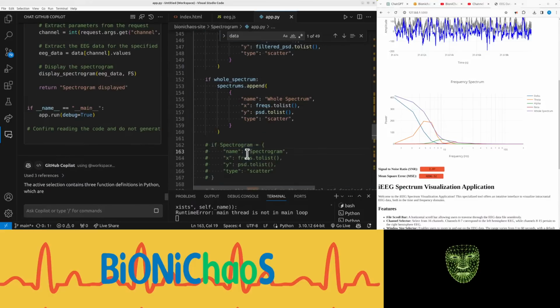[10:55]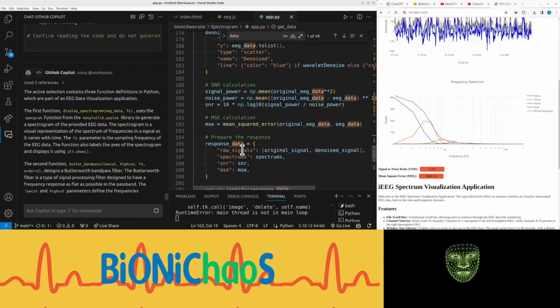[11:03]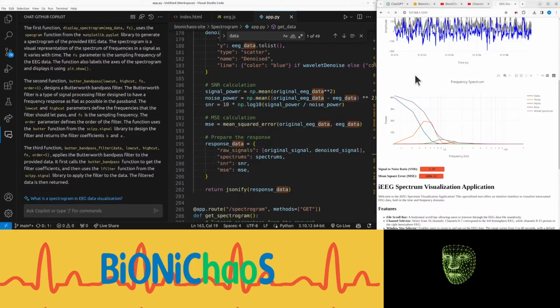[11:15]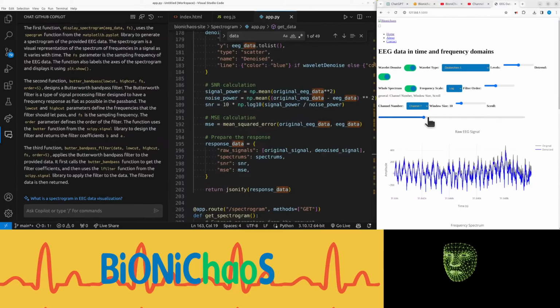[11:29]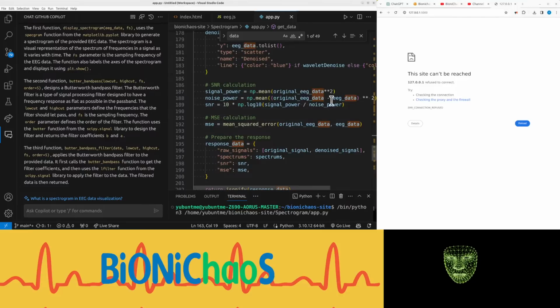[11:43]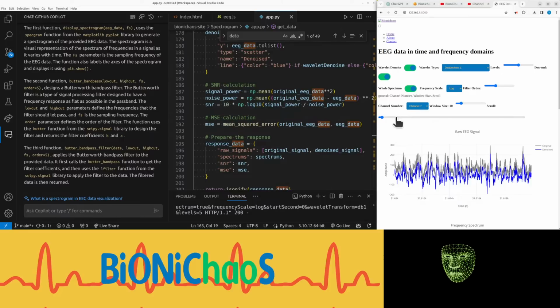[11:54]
Explain this. Okay, we need to get the names. Do we have a runtime error or something? How's this still working? Right, closing that window didn't stop the app from working. Okay, now it's working okay. Now, the records, spectrogram.
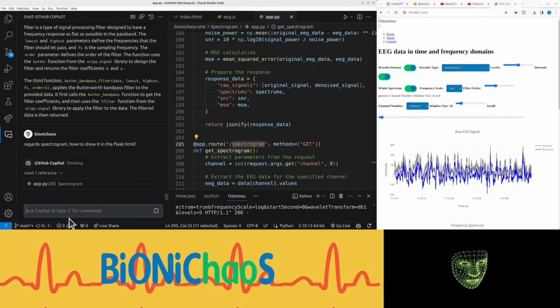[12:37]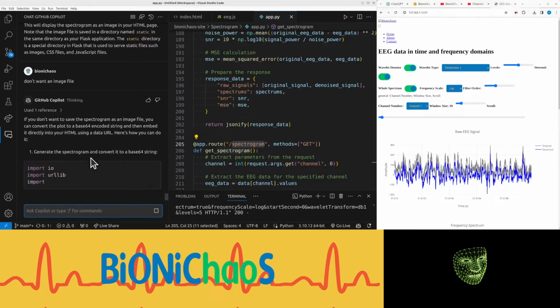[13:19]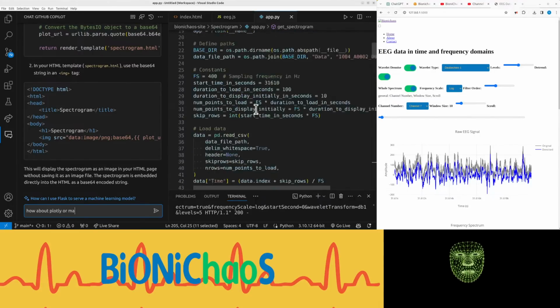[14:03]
How to show it in the HTML. We don't want to use an image file. Don't want to spectrate image file. Can convert to a base64 encoded string and embed directly into HTML. To understand, why not just use that? That's still using an image, isn't it? Can we just use Plotly? Or Matplotlib, because we're using both, aren't we?
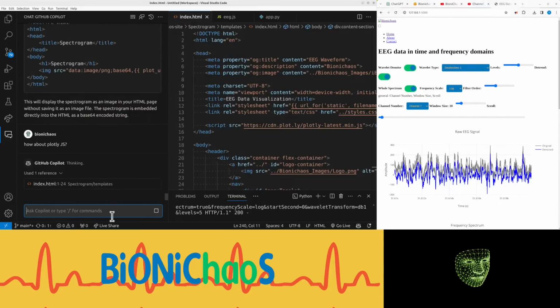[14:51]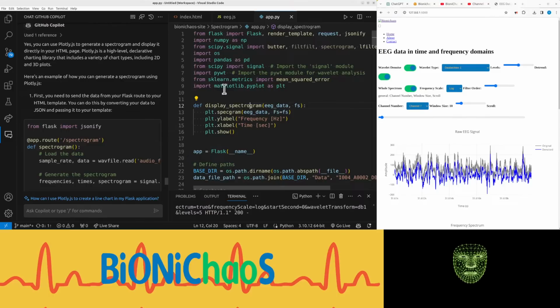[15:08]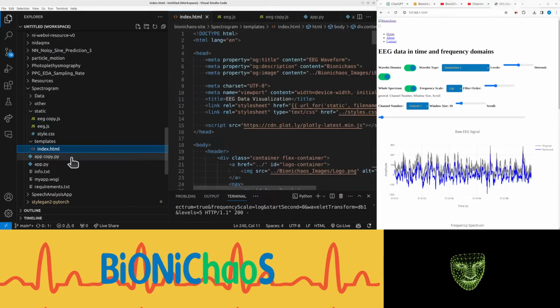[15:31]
Yeah, this is actually plotting the thing in a separate window. But how about Plotly JS? Yeah, we need to send the data to Flask. So we probably won't be using that, which is okay. It's actually currently working, even though it's displaying the thing in a separate window, but I'll just create a copy for, well, actually all the files that we are going to change.
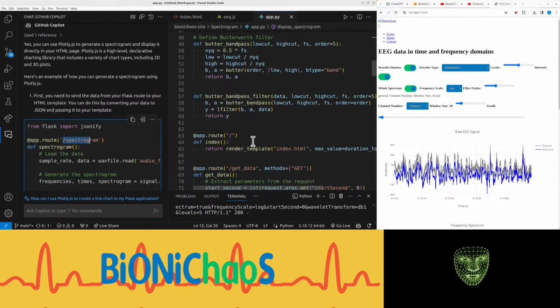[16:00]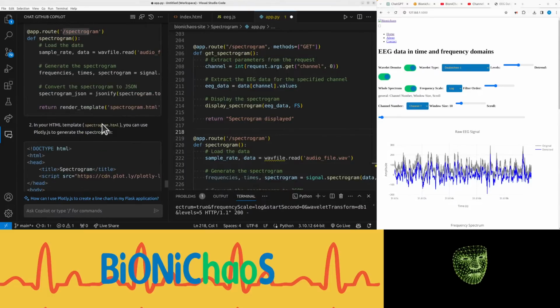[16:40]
And back to the chat. So already have JSON file imported. Now in spectrogram, should be at the bottom here. Just place them side by side for a sec. There's no WAV file. There is no WAV file. It's the data is already loaded. Do you have access to the files or not? Never too sure.
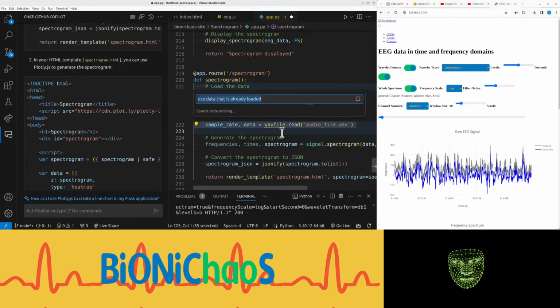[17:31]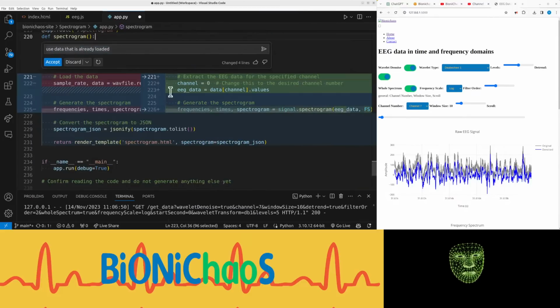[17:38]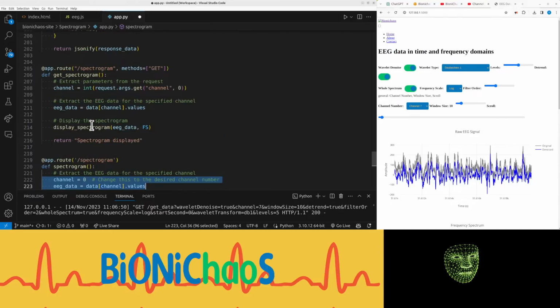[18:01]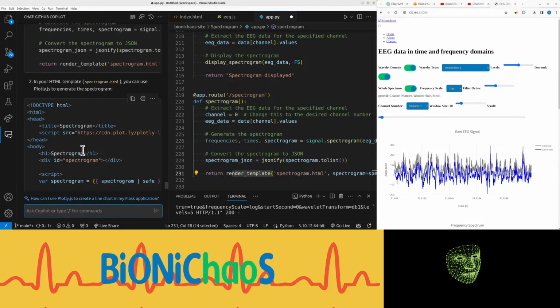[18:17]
Control I. Use data that is already loaded. Yeah, this is hard to troubleshoot this way, but it looks legit. Yeah, it's using the data variable, so we'll accept that. Okay, it's returning HTML and JSON. Let's go back to the chat.
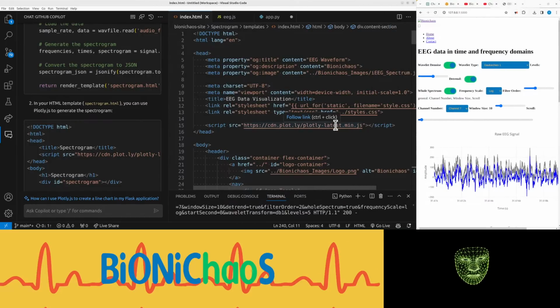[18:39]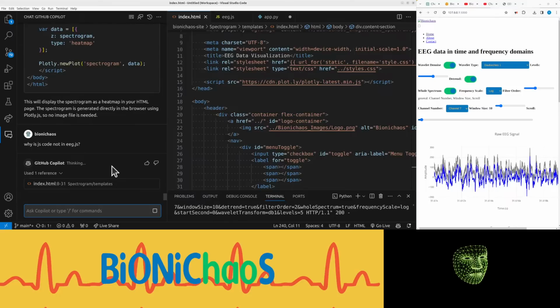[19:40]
So in the HTML, we should already have that min.js. Is that what it's using? Yeah, latest min.js. Why is this script? Why can't we just not use JavaScript for this? Don't get it. Why is JS code not in EEG.js? Yeah, that's fine.
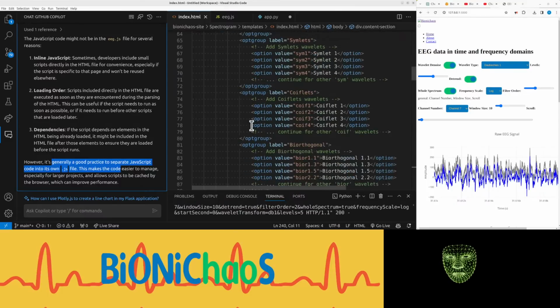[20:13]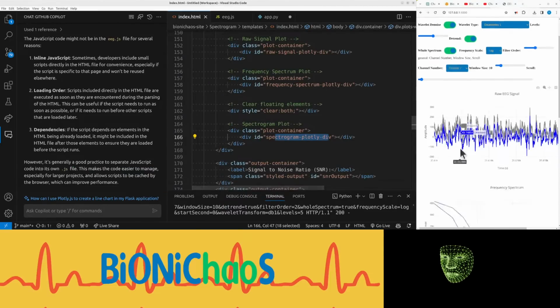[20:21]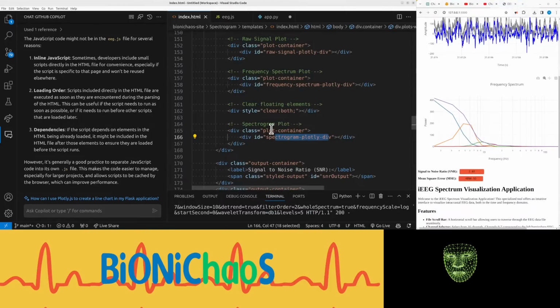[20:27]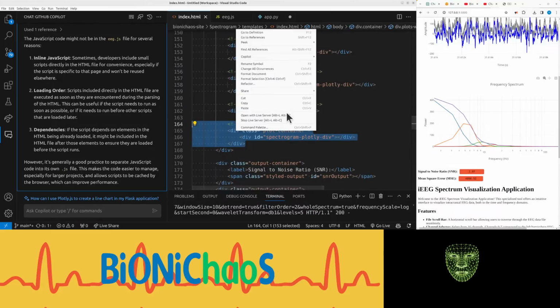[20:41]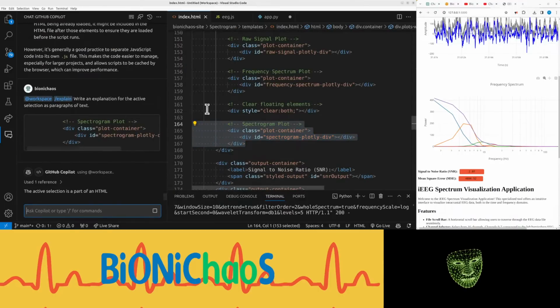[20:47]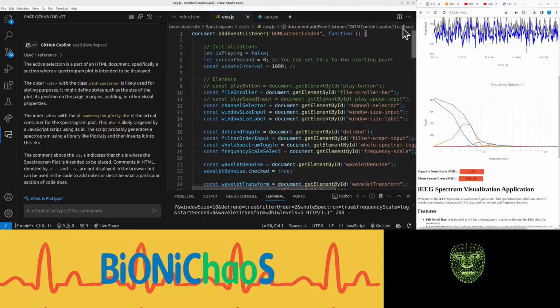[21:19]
So in HTML, we have a section for the spectrogram plot. Should be underneath there. Spectrum plot. Explain this. I'm mainly doing this so Copilot has access to that line. Now okay, how did this JavaScript become so complicated? Spectrum. No, there is spectrum. How about spectrogram?
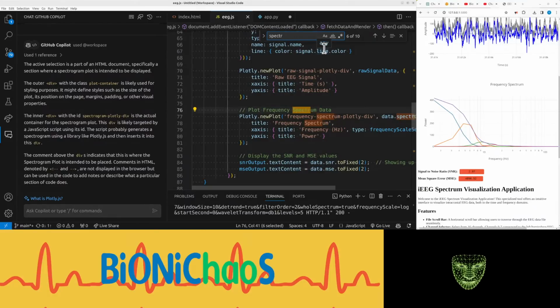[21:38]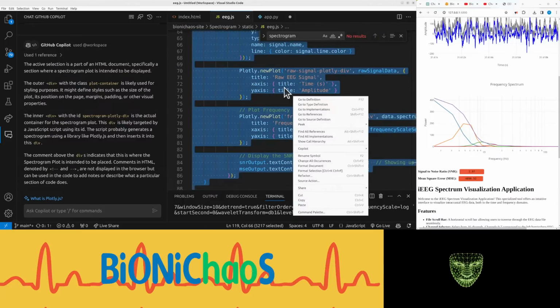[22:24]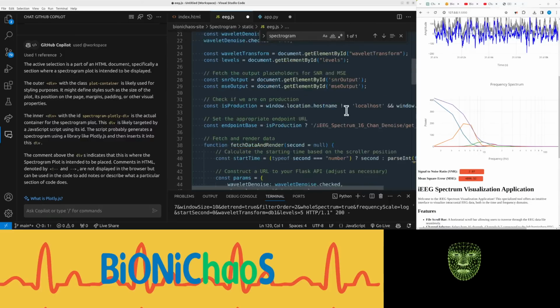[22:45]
Okay, I'm doing something wrong. Can I just do this control? I have to add... what did it change? No, that's not what I meant. Okay, it doesn't have the context, this thing.
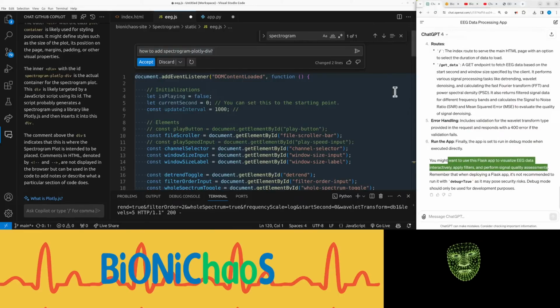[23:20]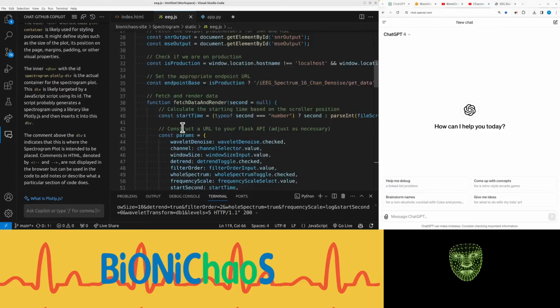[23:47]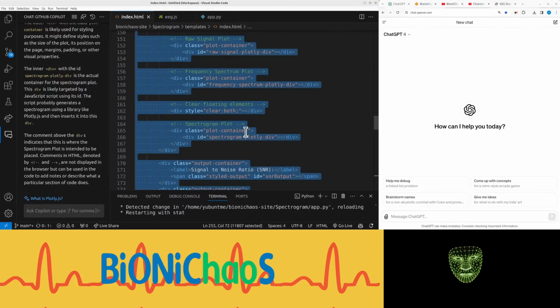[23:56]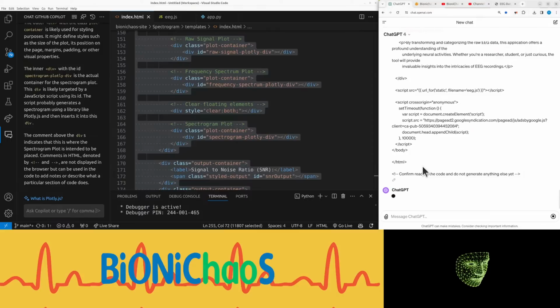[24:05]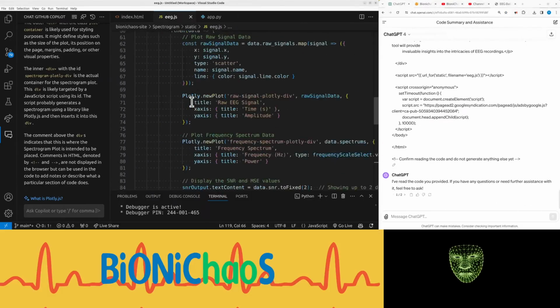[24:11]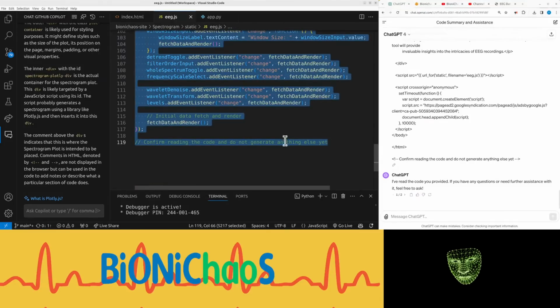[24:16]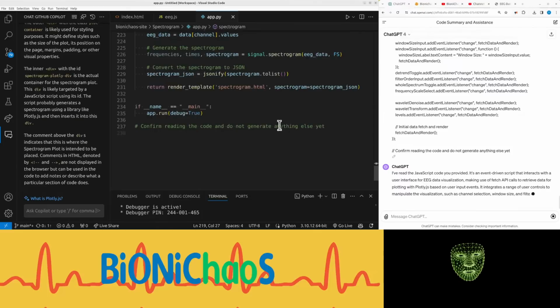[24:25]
Let's try GPT. Start a new chat GPT-4. And no, that's this guy. It's doing some rubbish. Yeah, confirm reading the code. Don't generate anything yet. Let's see, sometimes it ignores this instruction. Yep, that's good. This one should also have this. Read the code, don't generate anything at the bottom. That's great.
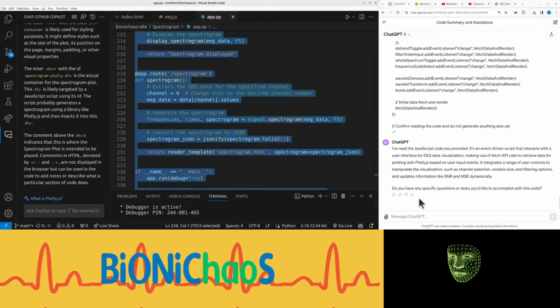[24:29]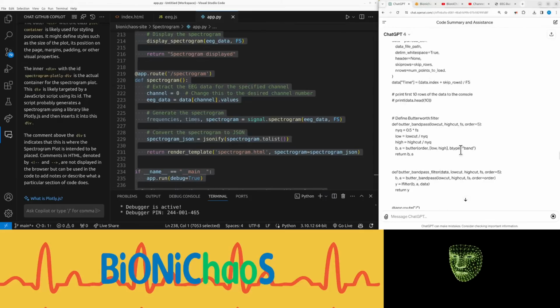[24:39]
We actually have the text to speech running. I've read the JavaScript code you provided. It's an event-driven script that interacts with the user interface for EEG data visualization, making use of fetch API calls to retrieve data for plotting with Plotly.js based on user input events. It integrates a range of user controls to manipulate the visualization, such as channel selection, window size, and filtering options, and updates information like SNR and MSE dynamically.
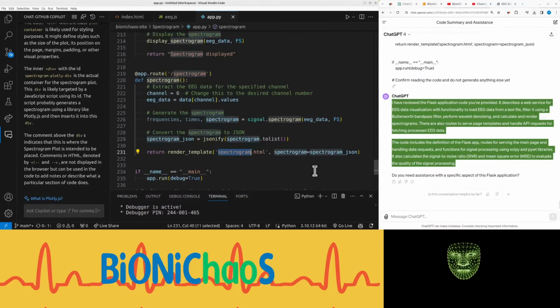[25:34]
I have reviewed the Flask application code you've provided. It describes a web service for EEG data visualization with functionality to load EEG data from a text file, filter it using a Butterworth bandpass filter, perform wavelet denoising, and calculate and render spectrograms. There are also routes to serve page templates and handle API requests for fetching processed EEG data. The code includes the definition of the Flask app, routes for serving the main page and handling data requests, and functions for signal processing using SciPy and PyWT libraries. It also calculates the signal-to-noise ratio, SNR, and mean square error, MSE, to evaluate the quality of the signal processing.
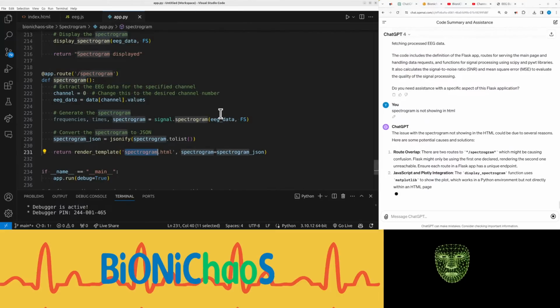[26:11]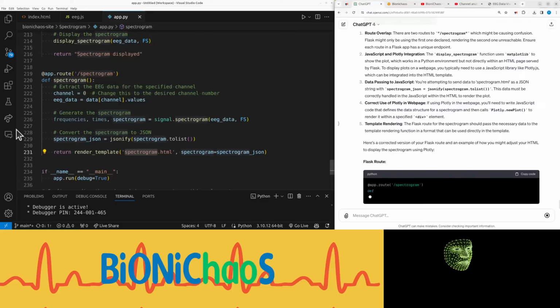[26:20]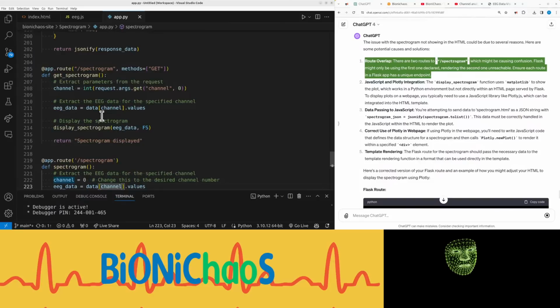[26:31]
Okay, so the main thing is that the spectrogram is not showing in HTML. And let's see what it says. The issue with the spectrogram not showing in the HTML could be due to several reasons. Here are some potential causes and solutions. Route overlap. There are two routes to spectrogram, which might be causing confusion. Flask might only be using the first one declared, rendering the second one unreachable. Ensure each route in a Flask app has a unique endpoint. Okay, that's a good suggestion. Yeah, I want to do the second one.
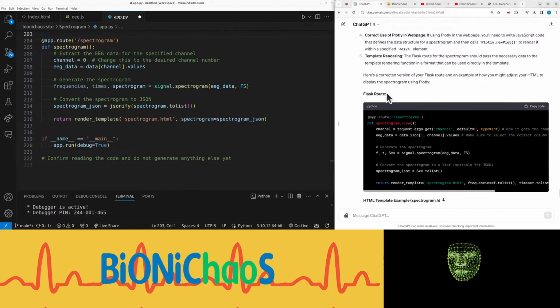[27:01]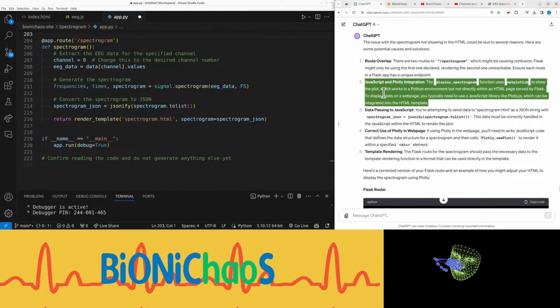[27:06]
JavaScript and Plotly integration. The display_spectrogram function uses matplotlib to show the plot, which works in a Python environment, but not directly within an HTML page served by Flask. To display plots on a web page, you typically need to use a JavaScript library like Plotly.js, which can be integrated into the HTML template. Okay, that's good advice. Data passing to JavaScript. You're attempting to send data to spectrogram.html as a JSON string with spectrogram_json equals jsonify(spectrogram.tolist()). This data must be correctly handled in the JavaScript within the HTML to render the plot. Yeah, we haven't changed the JavaScript yet.
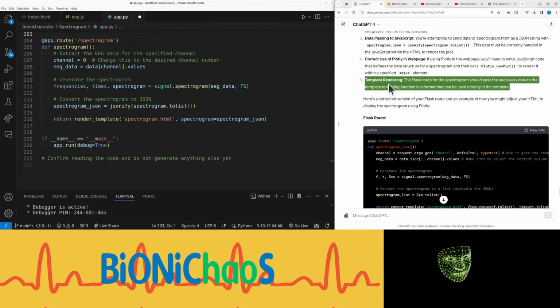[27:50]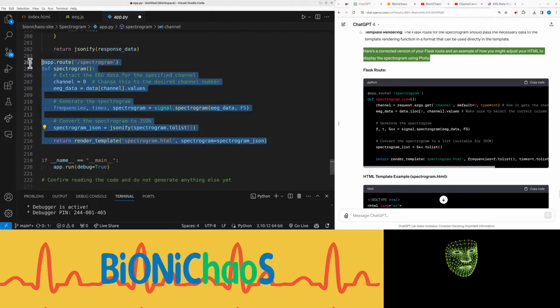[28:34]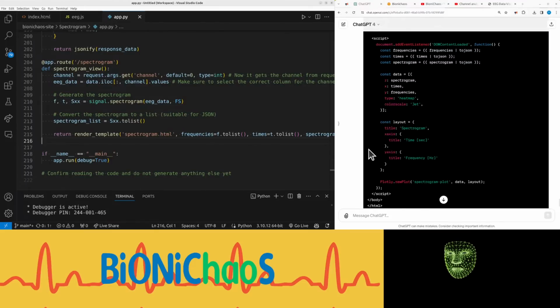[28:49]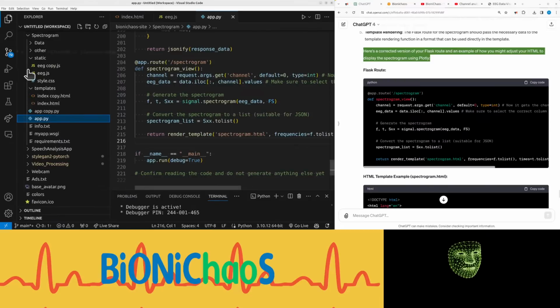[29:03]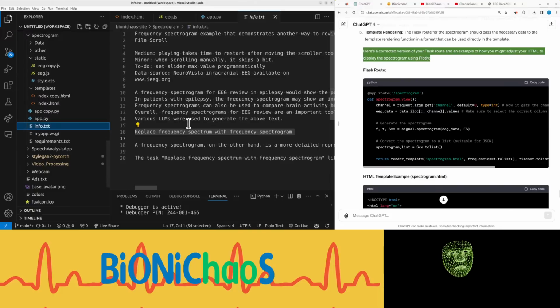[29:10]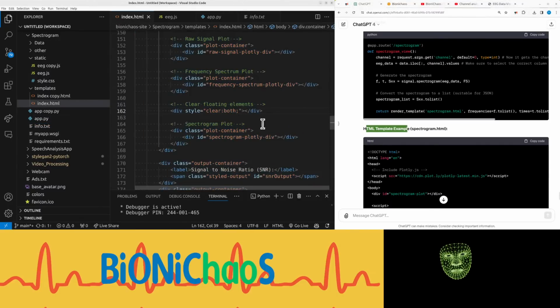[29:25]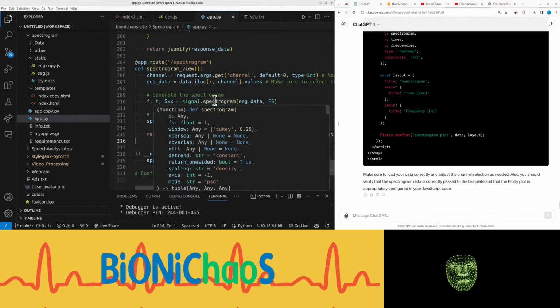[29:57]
Just go with that one for now. And then in HTML. Wait a sec. So we have one HTML. We should have the file structure. No, we don't have the file structure. The script should be separate. Okay, so first of all, it's getting a bit mixed up. We have the spectrogram plot.
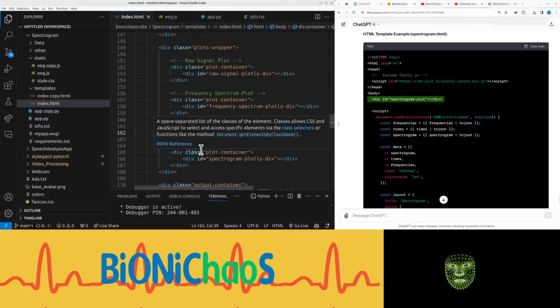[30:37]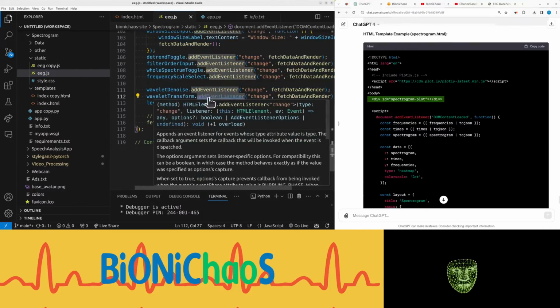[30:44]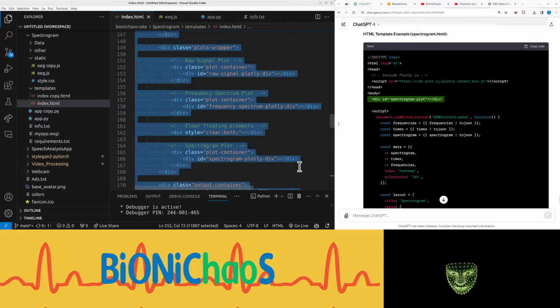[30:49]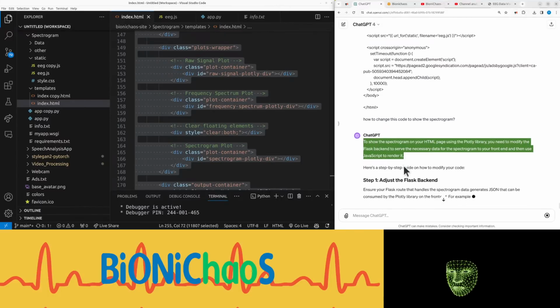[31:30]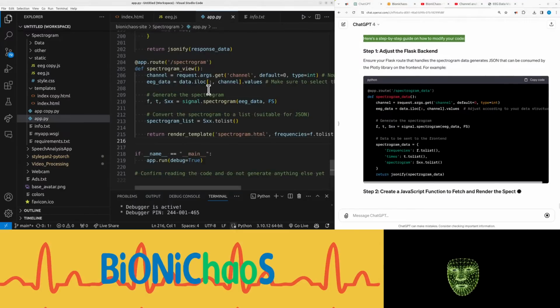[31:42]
Let's do JS first. No, let's do HTML first. Sorry for that. How to change this code in terms of the spectrogram. Then we need to do the same with JavaScript. Yeah, we want to use JavaScript to render it. Here's step by step. Okay, we already did this. Is it the same or changing it again? It's changing it.
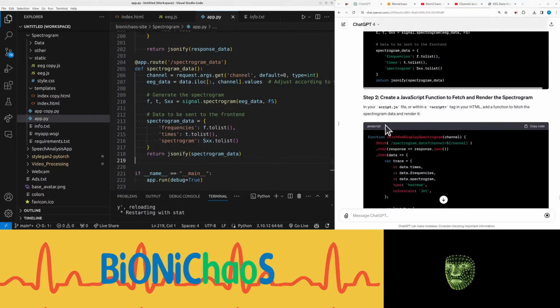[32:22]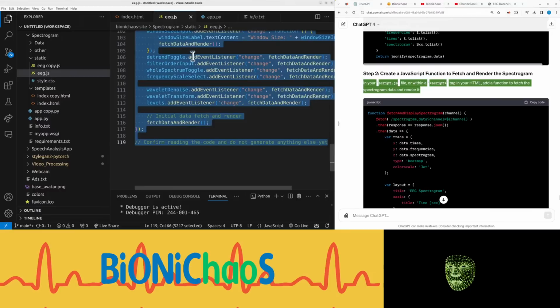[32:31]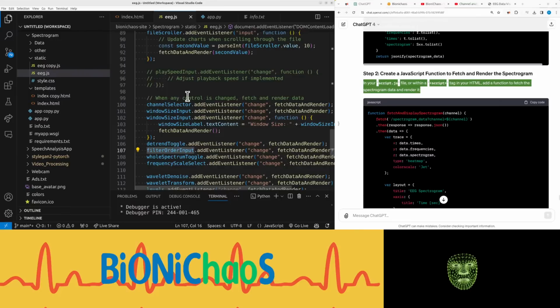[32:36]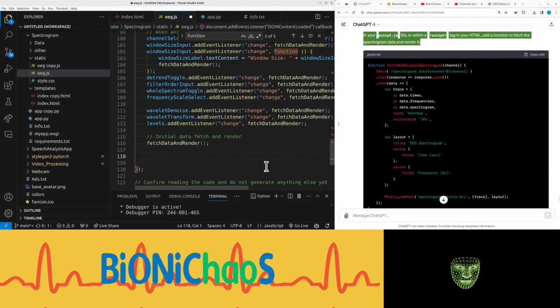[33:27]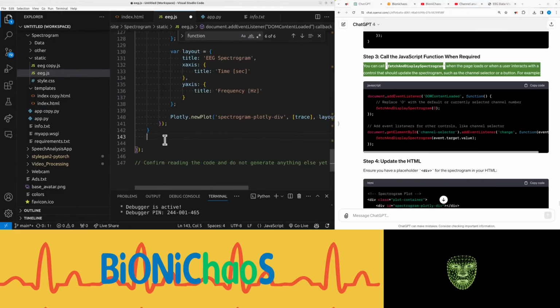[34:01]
Okay, let's do it there. Yeah, we need to call it. You can call fetch and display spectrogram when a page loads or when a user interacts with a control that should update the spectrogram, such as the channel selector or a button. For example, it can just be placed on there after the function. It's not giving me any errors.
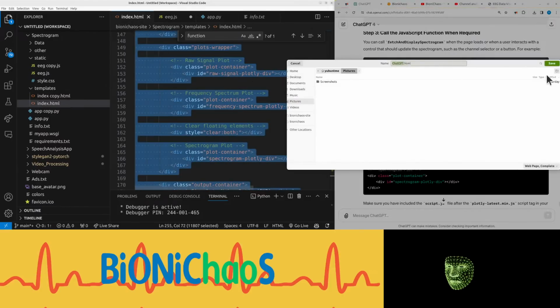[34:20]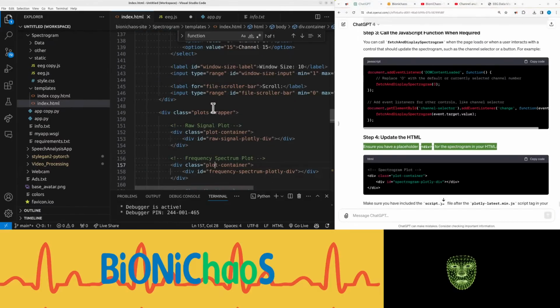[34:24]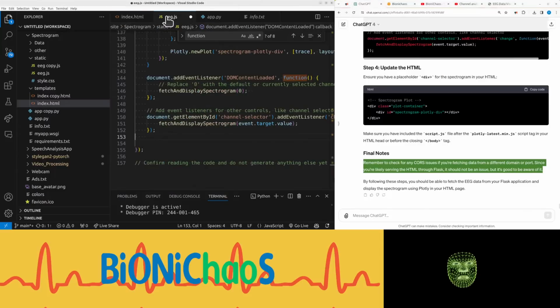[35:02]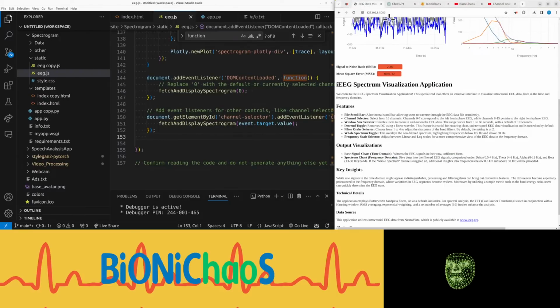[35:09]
And in the HTML we have that, oops, division. Yep, that's right. Make sure you have included the script JS file after the plotly latest.min JS script tag in your HTML head or before the closing body tag. Yeah, we should have that. Okay. Remember to check for any CORS issues if you're fetching data from a different domain or port. Since you're likely serving the HTML through Flask, it should not be an issue, but it's good to be aware of it.
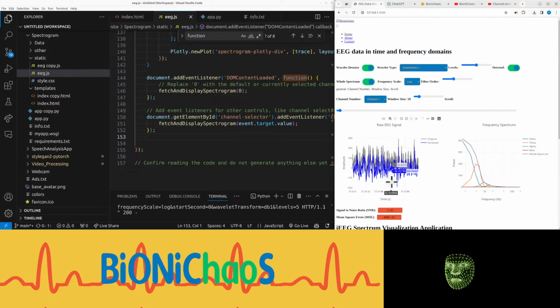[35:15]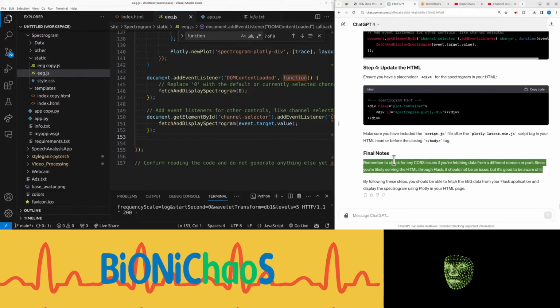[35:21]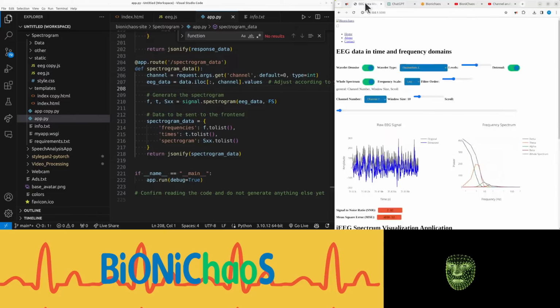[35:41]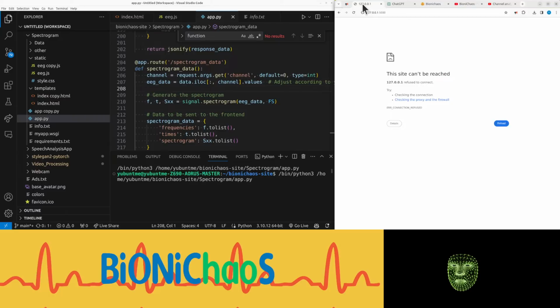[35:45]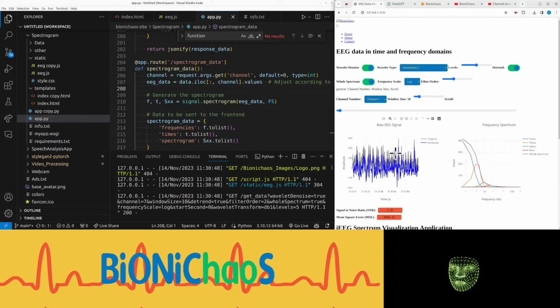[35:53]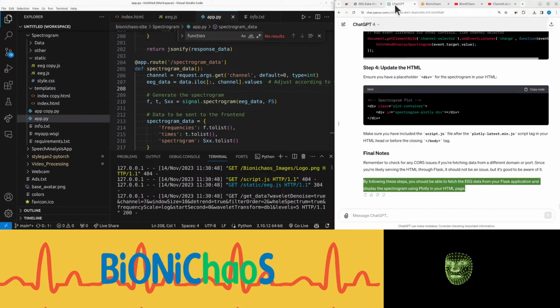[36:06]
By following these steps, you should be able to fetch the EEG data from your Flask application and display the spectrogram using Plotly in your HTML page. Do we need a proper restart? Let's do a proper restart. Don't even see the placeholder for the plot.
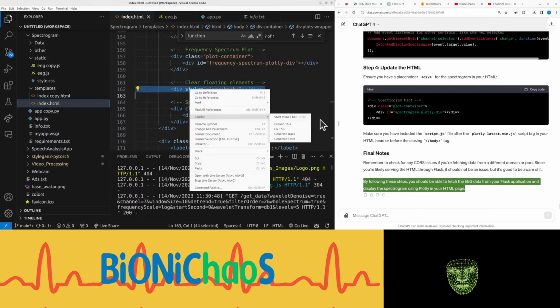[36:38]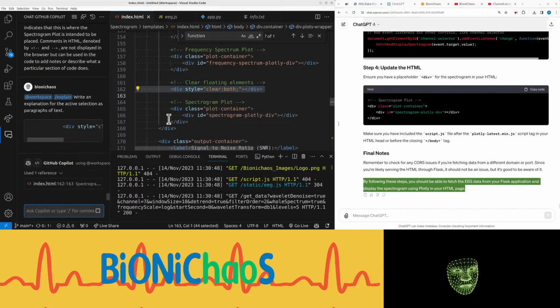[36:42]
Oh, is this clearing them somehow? Use Copilot to explain that bit. Floating elements, property. Just to clear previous floats, to understand what it means, but it's probably best to get rid of it for a sec.
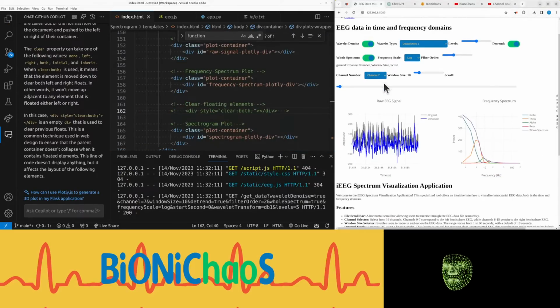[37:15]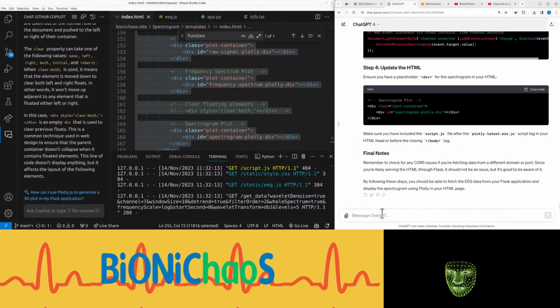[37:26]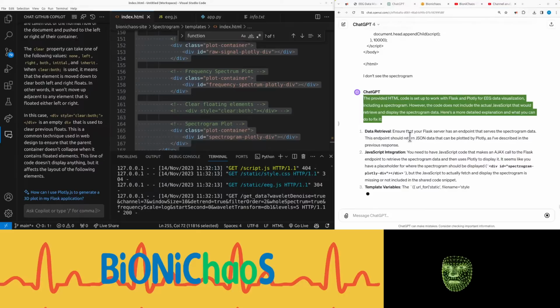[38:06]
Okay, let's go back to GPT, to see the spectrogram. Sorry, super long prompt. Probably get penalized for it. But I need to keep the context intact. The provided HTML code is set up to work with Flask and Plotly for EEG data visualization, including a spectrogram. However, the code does not include the actual JavaScript that will retrieve and display the spectrogram data. Here's a more detailed explanation on what you can do to fix it.
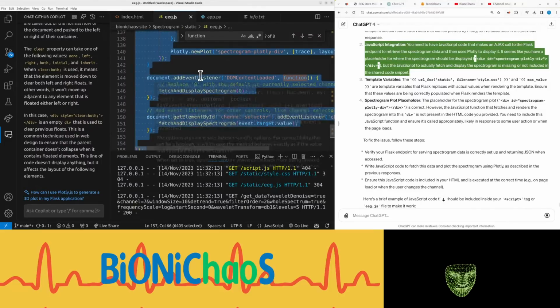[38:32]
Data retrieval. Ensure that your Flask server has an endpoint that serves the spectrogram data. This endpoint should return JSON data that can be plotted by Plotly, as I described in the previous response. JavaScript integration. You need to have JavaScript code that makes an AJAX call to the Flask endpoint to retrieve the spectrogram data and then uses Plotly to display it. It seems like you have a placeholder for where the spectrogram should be displayed, div id equals spectrogram-plotly-div, but the JavaScript to actually fetch and display the spectrogram is missing or not included in the shared code snippet.
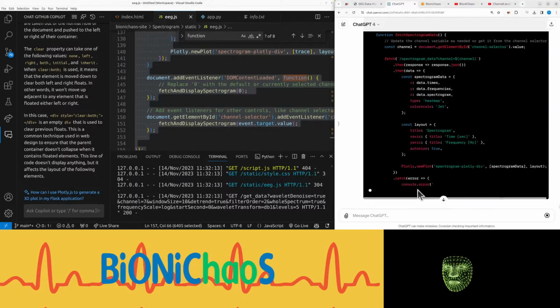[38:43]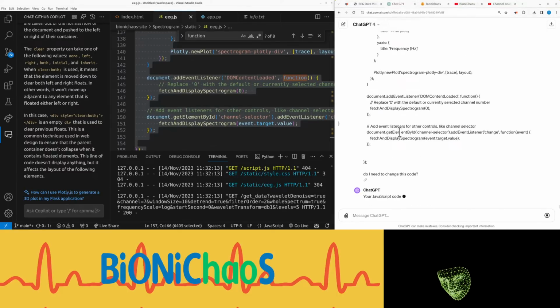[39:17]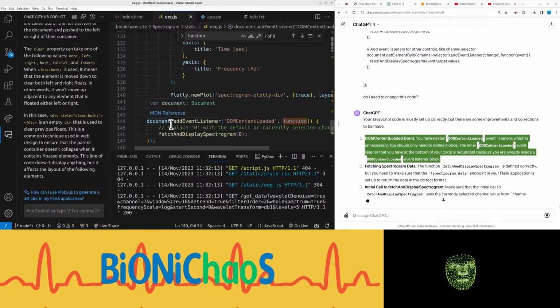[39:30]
So that's the actual JavaScript. Do I need to change? I think I stuffed something up in it. DOMContentLoaded event. You have nested DOMContentLoaded event listeners, which is unnecessary. You should only need to define it once. The inner DOMContentLoaded event listener that you have at the bottom of your code is redundant because you're already inside a DOMContentLoaded event listener block. It's this bit here, isn't it?
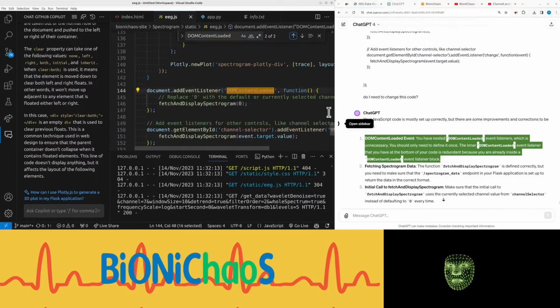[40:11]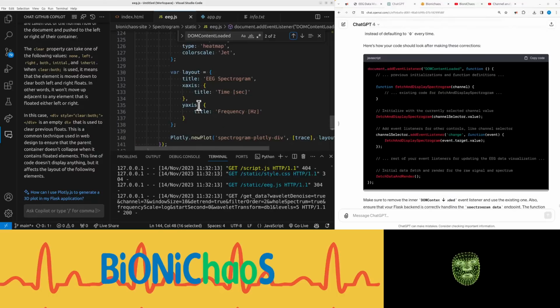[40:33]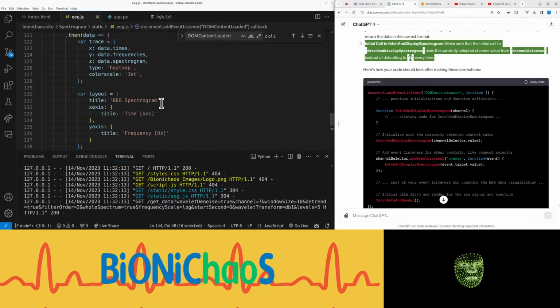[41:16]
Guess do I just remove that? It should be at the beginning of fetch and render. Should be, and fetching spectrogram data. The function fetch and display spectrogram is defined correctly, but you need to make sure that the spectrogram_data endpoint in your Flask application is set up to return the data in the correct format. Initial call to fetch and display spectrogram. Make sure that the initial call to fetch and display spectrogram uses the currently selected channel value from channel selector instead of defaulting to 0 every time.
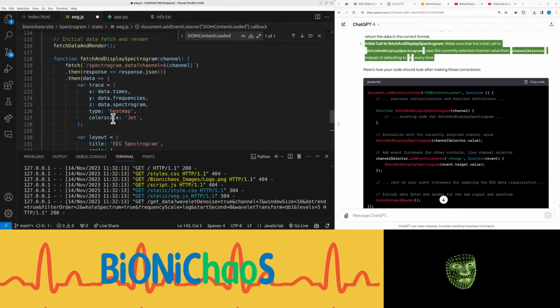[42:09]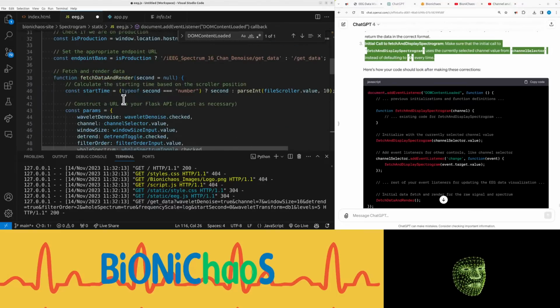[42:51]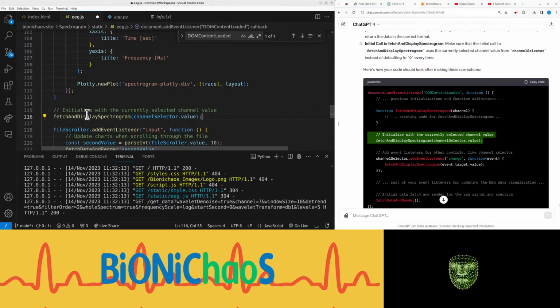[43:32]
Okay, so don't need that. Doesn't matter what the function is, is it? And function should fetch and render should be at the bottom. Place the second function over here. And make a call after the function. And event listener.
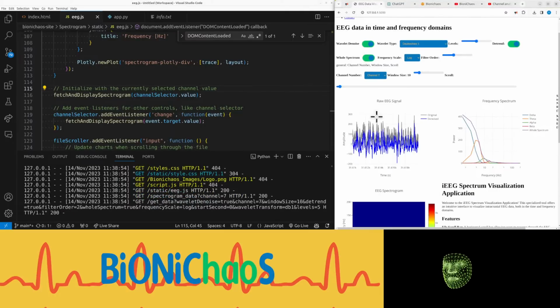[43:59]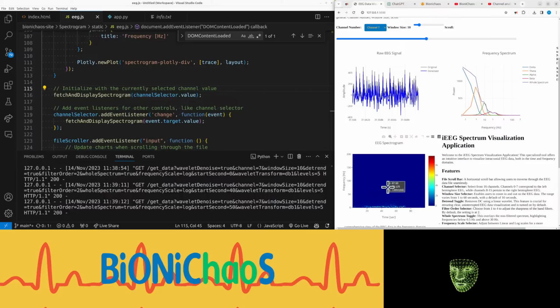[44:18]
Make sure to remove the inner DOMContentLoaded event listener and use the existing one. Also, ensure that your Flask backend is correctly handling the spectrogram_data endpoint. The function fetch data and render should be invoked within the same DOMContentLoaded listener, as shown above. Well, right, it's actually working. It's displaying the spectrogram for the whole 100 seconds.
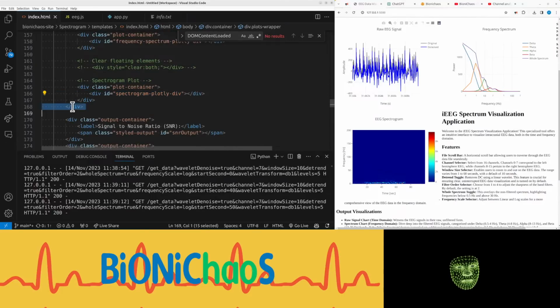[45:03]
And why the description is overlapping like that?
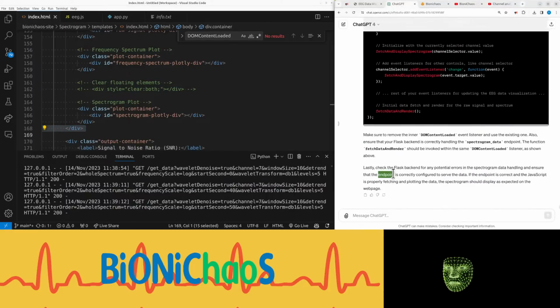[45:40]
Lastly, check the Flask backend for any potential errors in the spectrogram data handling and ensure that the endpoint is correctly configured to serve the data. If the endpoint is correct and the JavaScript is properly fetching and plotting the data, the spectrogram should display as expected on the web page.
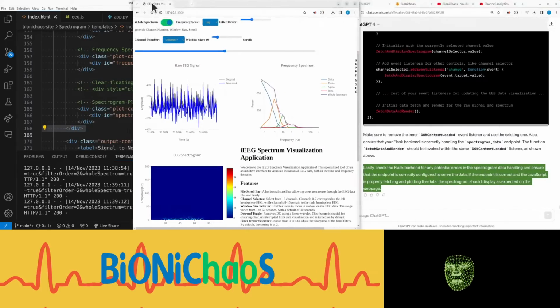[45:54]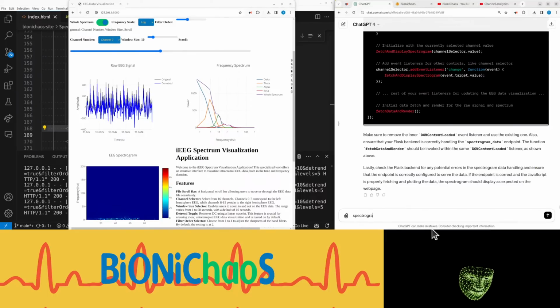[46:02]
Spectrogram is displayed okay. But it's using the entire data they loaded.
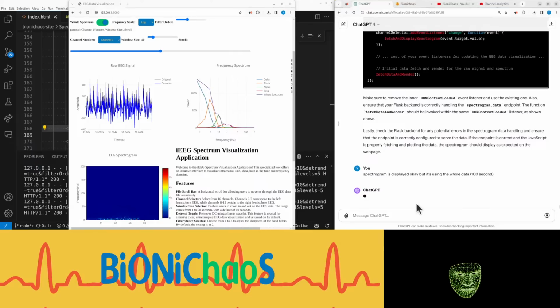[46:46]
Can just say this because hopefully if it understands the context, it should realize that we want to link to those controllers as well.
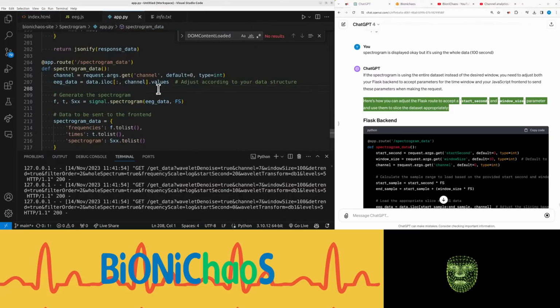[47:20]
If the spectrogram is using the entire dataset instead of the desired window, you need to adjust both your Flask backend to accept parameters for the time window and your JavaScript frontend to send these parameters when making a request. Here's how you can adjust the Flask route to accept the start_second and window_size parameter and use them to slice the dataset appropriately.
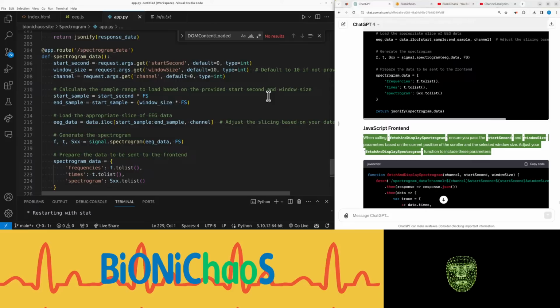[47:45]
Doing the same thing. When calling fetch and display spectrogram, ensure you pass the start second and window size parameters based on the current position of the scroller and the selected window size. Adjust your fetch and display spectrogram function to include these parameters.
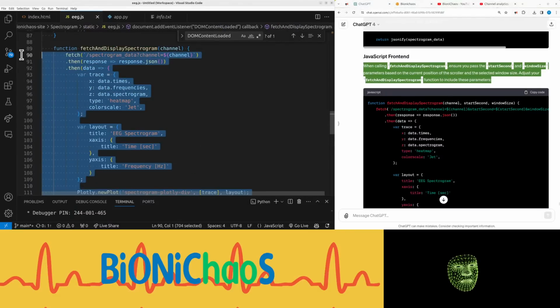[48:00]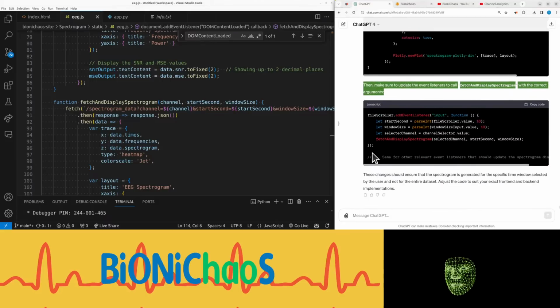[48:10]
Yeah, it's having all the context and everything, which is awesome. Then, make sure to update the event listeners to call fetch and display spectrogram with the correct arguments.
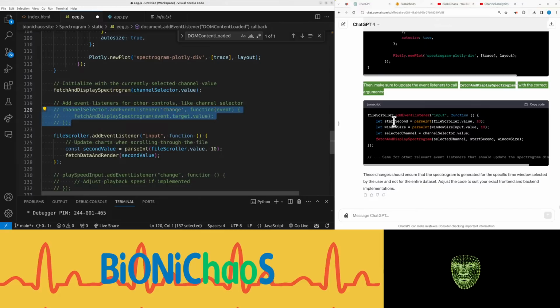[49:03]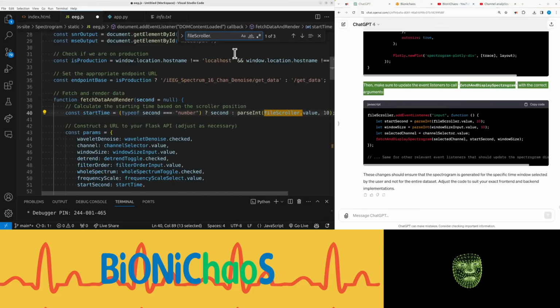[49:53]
So I don't need to do that anymore, do I? If I don't need this. fileScroller. Do I add it as a
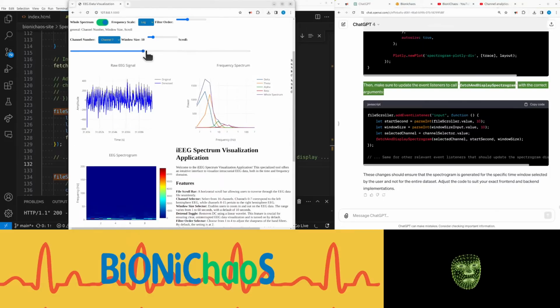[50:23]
Right? Let's change it. Okay. Yeah, and select the window size of 100. It should really go to the beginning of the file. Set this to around 50. Well, yeah, it's working pretty well.
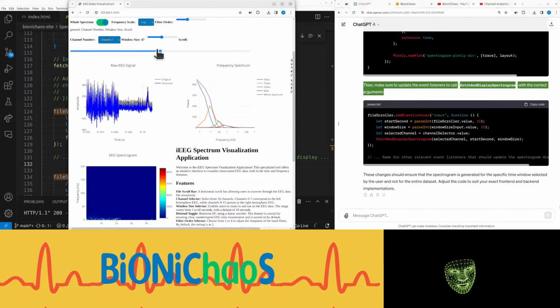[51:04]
The amplitudes here, it's the third axis, the color there, are auto scaling, but looks pretty good.
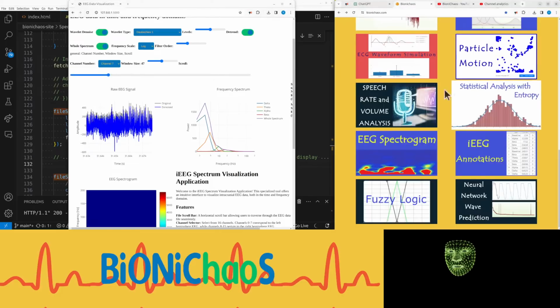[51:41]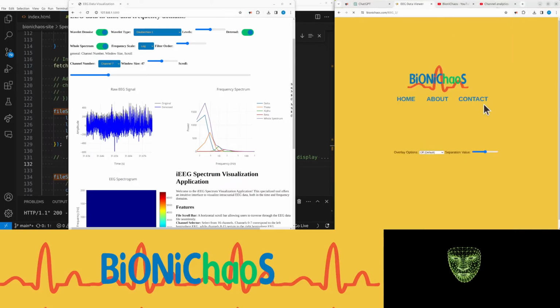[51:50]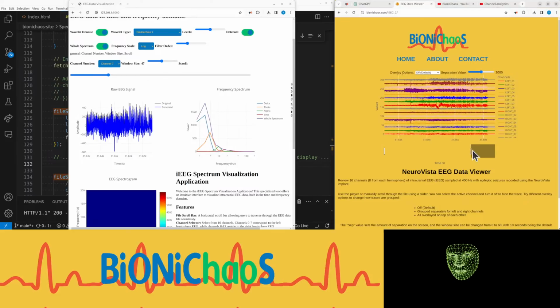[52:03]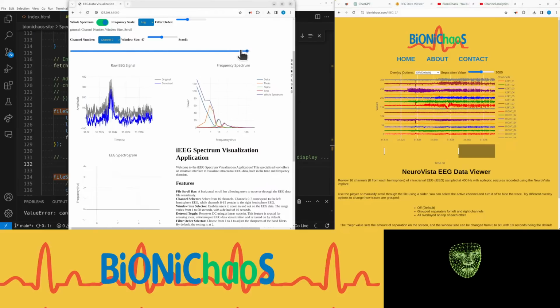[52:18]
I had a better one in this EEG review, which was a bit heavy, still loading, but had this nice bit there. It was quite handy. Yeah, that was nice. Yeah, we'll see how we introduce that.
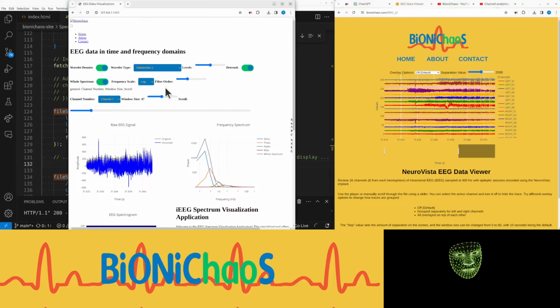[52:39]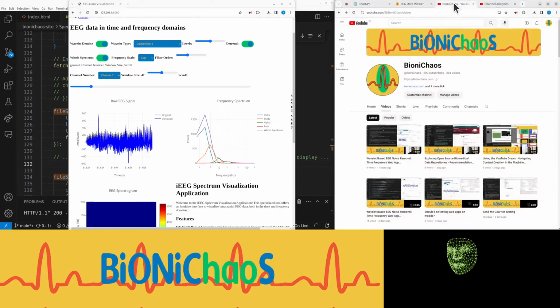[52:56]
Should we get rid of the frequency spectrum? Just take a quick break.
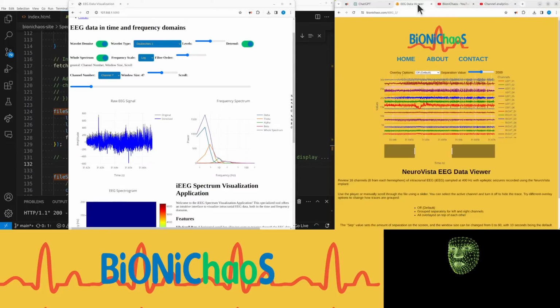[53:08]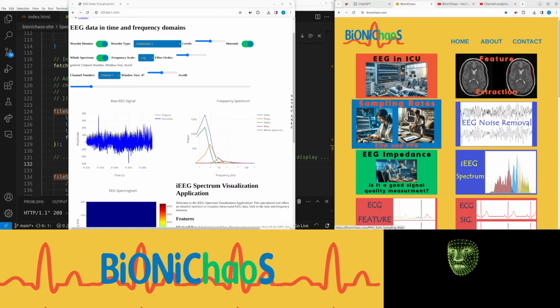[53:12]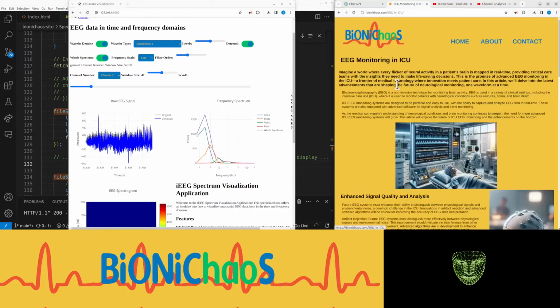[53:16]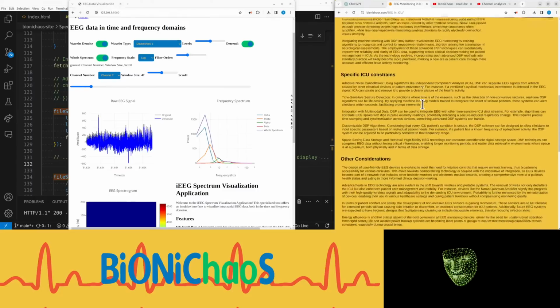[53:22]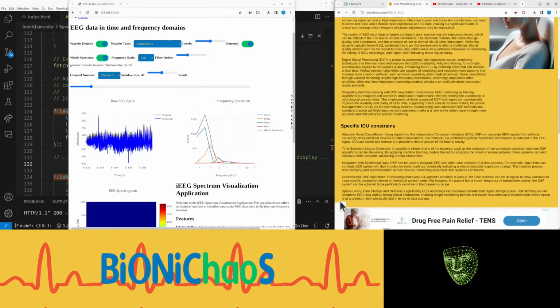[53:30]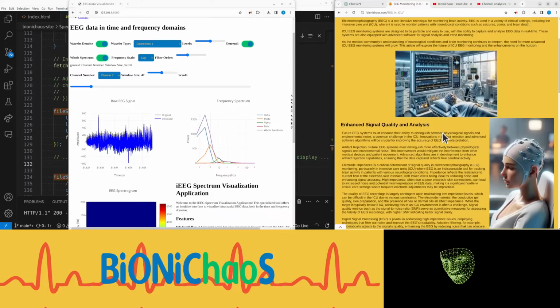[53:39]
By the way, co-authored with GPT, we wrote this blog on the topic of EEG monitoring in the ICU. It's also generated some nice images that I don't think quite look like an ICU. There's also not much sense for the screen to be behind the patient kind of thing. But it's a good image overall.
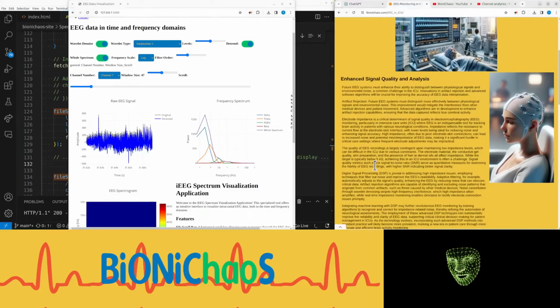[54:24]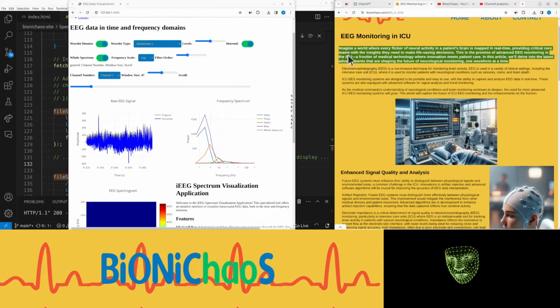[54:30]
And then there's this futuristic looking head stage. Kept asking it to reduce the number of electrodes, but it wouldn't do it. So it still resorts to how many electrodes it feels like should be there. The text should be pretty decent. We can read it together if you like.
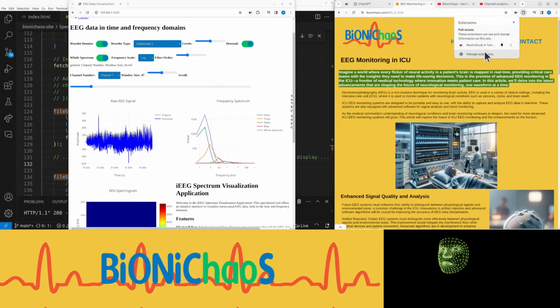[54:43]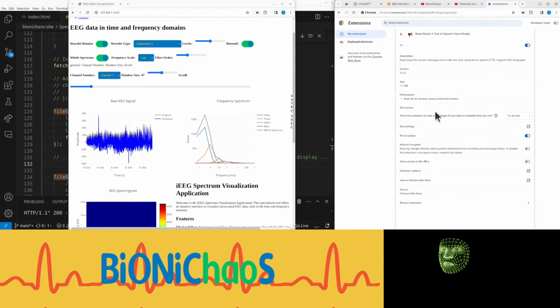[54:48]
Imagine a world where every flicker of neural activity in a patient's brain is mapped in real time, providing critical care teams with the insights they need to make life-saving decisions. This is the promise of advanced EEG monitoring in the ICU, a frontier of medical technology where innovation meets patient care. In this article, we'll delve into the latest advancements that are shaping the future of neurological monitoring, one waveform at a time.
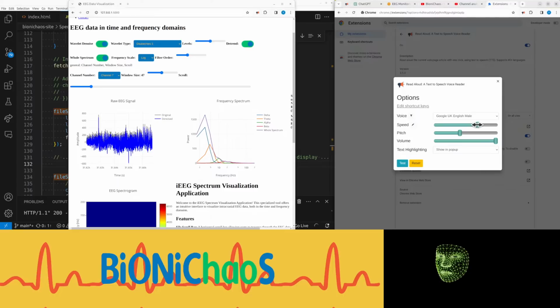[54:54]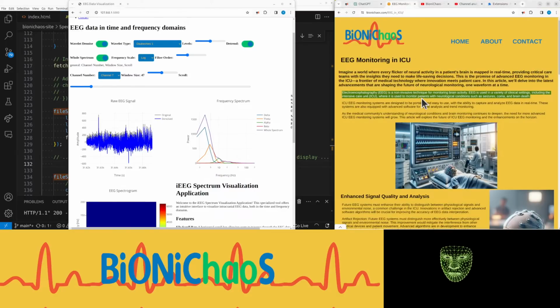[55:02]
To reduce the speed by a few notches. Electroencephalography, EEG, is a non-invasive technique for monitoring brain activity. EEG is used in a variety of clinical settings, including the intensive care unit, ICU, where it is used to monitor patients with neurological conditions such as seizures, coma, and brain death.
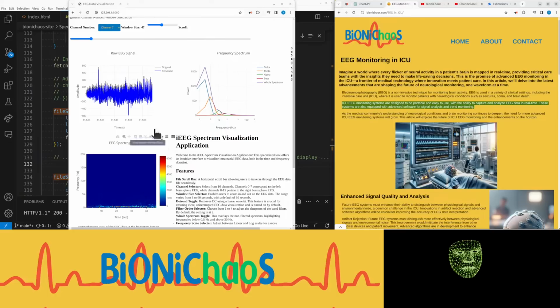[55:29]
ICU EEG monitoring systems are designed to be portable and easy to use, with the ability to capture and analyze EEG data in real time. These systems are also equipped with advanced software for signal analysis and trend monitoring.
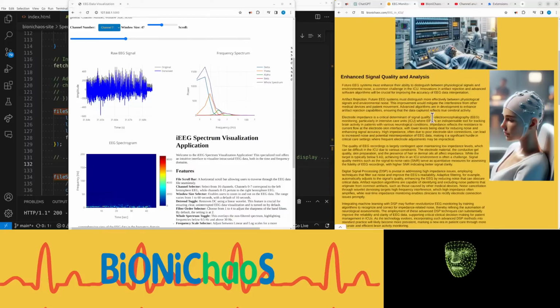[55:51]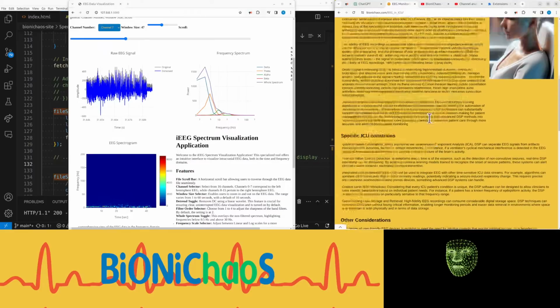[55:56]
As the medical community's understanding of neurological conditions and brain monitoring continues to deepen, the need for more advanced ICU EEG monitoring systems will grow. This article will explore the future of ICU EEG monitoring and the enhancements on the horizon.
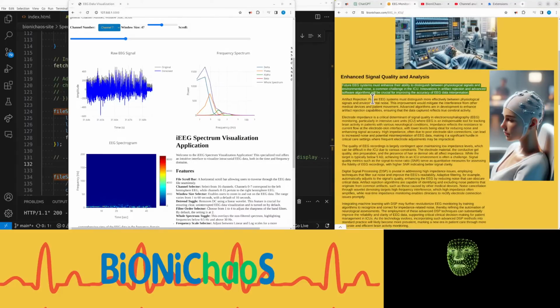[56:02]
Future EEG systems must enhance their ability to distinguish between physiological signals and environmental noise, a common challenge in the ICU. Innovations in artifact rejection and advanced software algorithms will be crucial for improving the accuracy of EEG data interpretation.
Yeah, there's a lot of fluff. It's getting into nitty-gritty, into some technical details over here. Artifact rejection. Future EEG systems must distinguish more effectively between physiological signals and environmental noise. This improvement would mitigate the interference from other medical devices and patient movement. Advanced algorithms are in development to enhance artifact rejection capabilities, ensuring that the data captured reflects true cerebral activity.
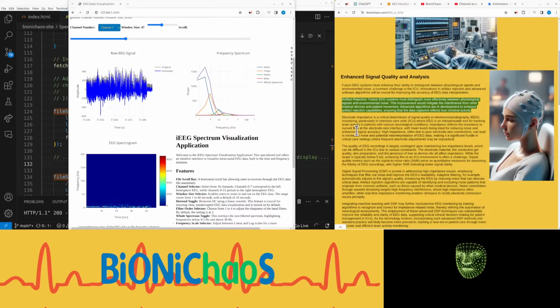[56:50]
Yeah, there's kind of not much there.
Electrode impedance is a critical determinant of signal quality in electroencephalography, EEG, monitoring, particularly in intensive care units, ICU, where EEG is an indispensable tool for tracking brain activity in patients with various neurological conditions. Impedance reflects the resistance to current flow at the electrode-skin interface, with low levels being ideal for reducing noise and enhancing signal accuracy. High impedance, often due to poor electrode-skin connections, can lead to increased noise and potential misinterpretation of EEG data, making it a significant hurdle in critical care settings where frequent electrode adjustments may be impractical.
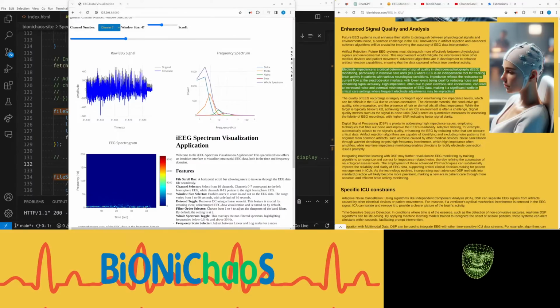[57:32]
The quality of EEG recordings is largely contingent upon maintaining low impedance levels, which can be difficult in the ICU due to various constraints. The electrode material, the conductive gel quality, skin preparation, and the presence of hair or dermal oils all affect impedance. While the target is typically below 5 kΩ, achieving this in an ICU environment is often a challenge. Signal quality metrics such as the signal-to-noise ratio, SNR, serve as quantitative measures for assessing the fidelity of EEG recordings, with higher SNR indicating better signal clarity.
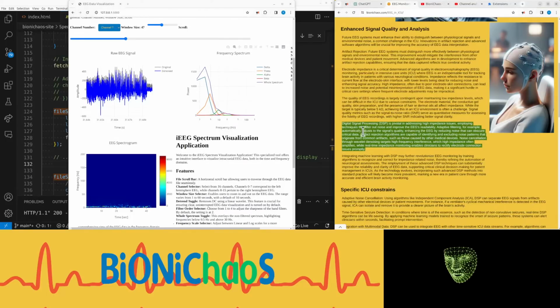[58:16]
Yeah, essentially, generally we're talking about how DSP can improve signal quality. So even if your impedance is too high, you could still get the meaningful signal out of the recording.
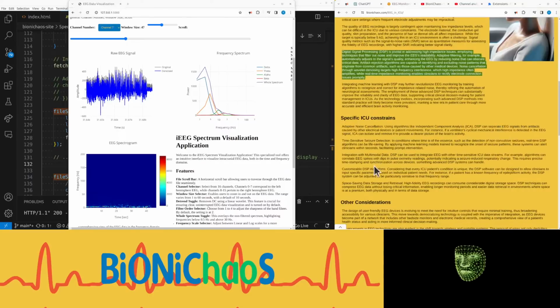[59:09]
Digital signal processing, DSP, is pivotal in addressing high impedance issues, employing techniques that filter out noise and improve the EEG's readability. Adaptive filtering, for example, automatically adjusts the signal's quality, enhancing the EEG by reducing noise that can obscure critical data. Artifact rejection algorithms are capable of identifying and excluding noise patterns that originate from common artifacts, such as those caused by other medical devices. Noise cancellation through wavelet denoising targets high-frequency interference, which high impedance often amplifies, while real-time impedance monitoring enables clinicians to rectify electrode connection issues promptly.
Oh, right. So essentially the speed of DSP processing in ICU should be much faster.
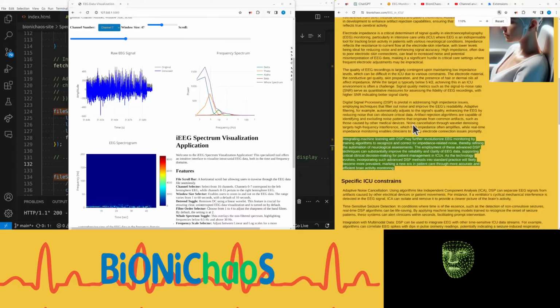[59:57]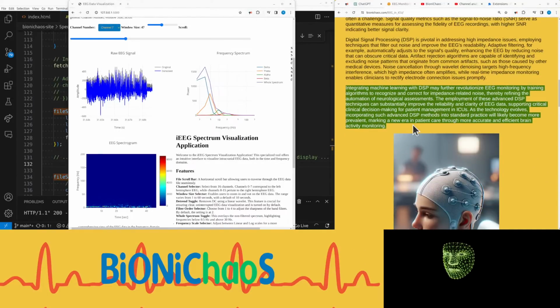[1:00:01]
Integrating machine learning with DSP may further revolutionize EEG monitoring by training algorithms to recognize and correct for impedance-related noise, thereby refining the automation of neurological assessments. The employment of these advanced DSP techniques can substantially improve the reliability and clarity of EEG data, supporting critical clinical decision-making for patient management in ICUs. As the technology evolves, incorporating such advanced DSP methods into standard practice will likely become more prevalent, marking a new era in patient care through more accurate and efficient brain activity monitoring.
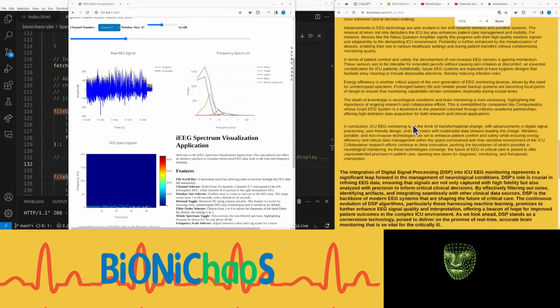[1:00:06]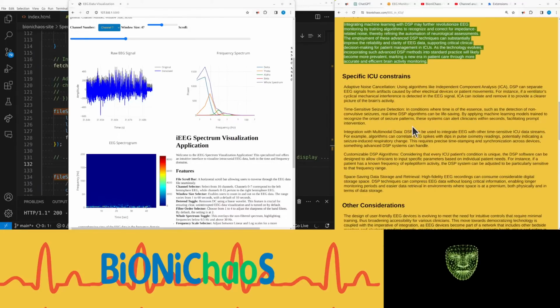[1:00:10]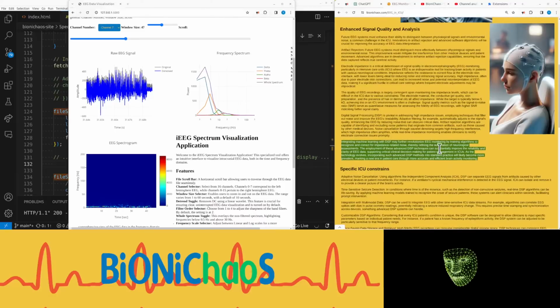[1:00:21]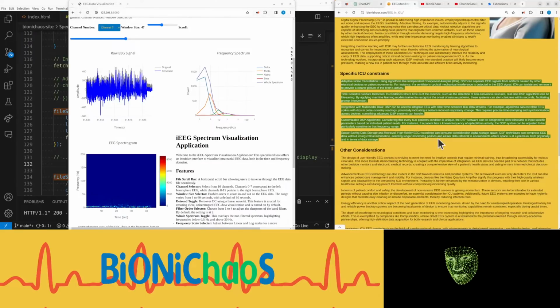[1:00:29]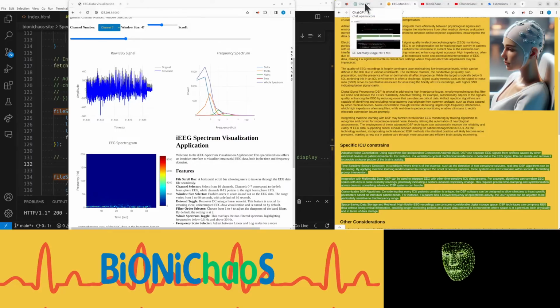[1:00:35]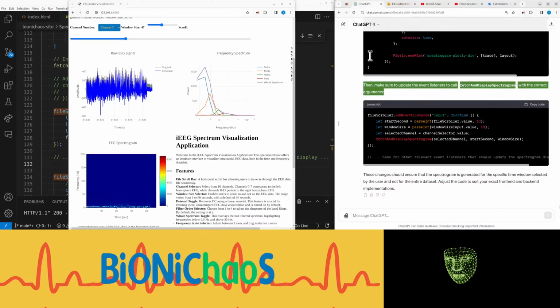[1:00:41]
Anyway, you get the gist. Maybe you could just read it yourself. Should have made a video of how the article was created, actually, but I did it offline. As you can tell, there were extra prompts. I don't remember. I could actually show the previous prompts, but I'll just do it another time. Let's go back to what we were doing.
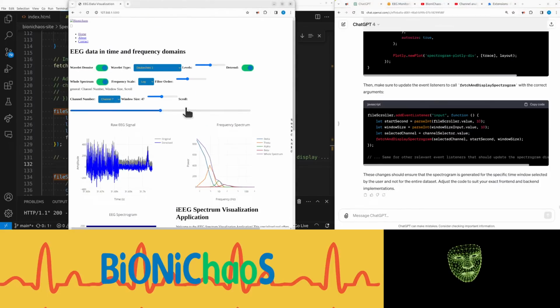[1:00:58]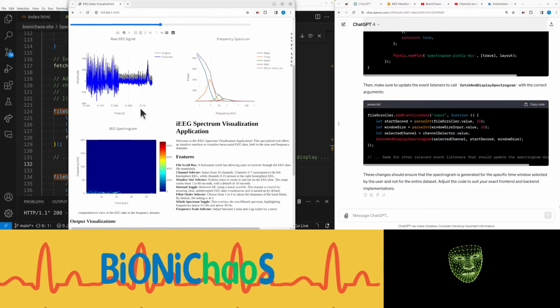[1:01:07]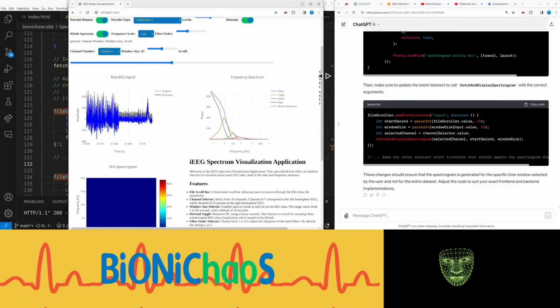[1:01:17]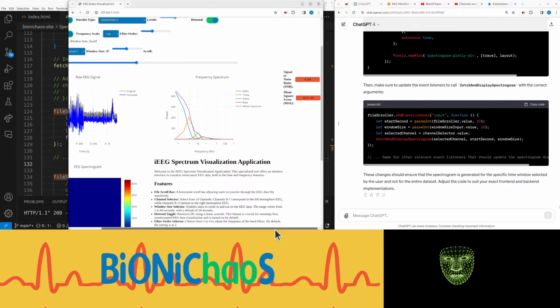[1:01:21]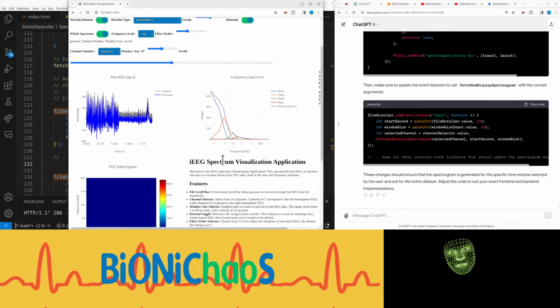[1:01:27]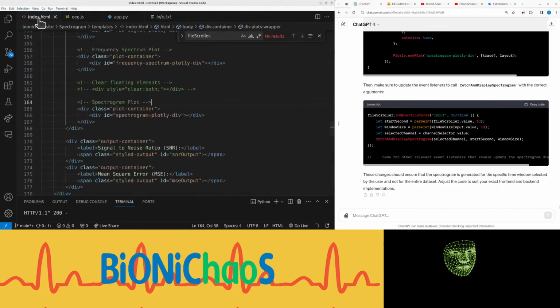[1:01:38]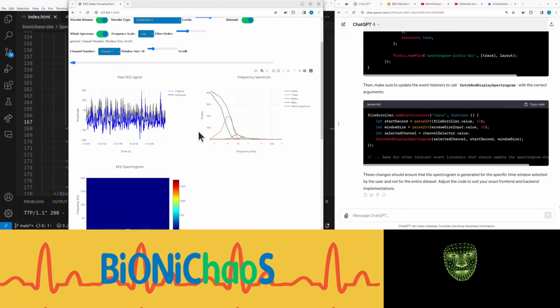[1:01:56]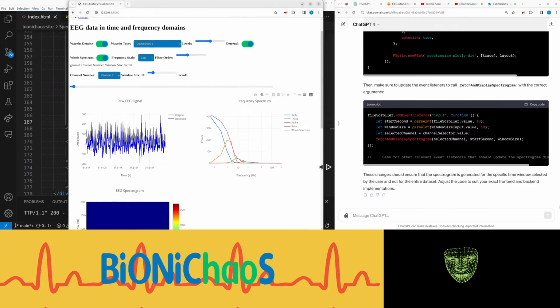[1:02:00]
Just realized that some of those controls we don't need. Text over there is really weird. Let's bring the text on the side. Why? Maybe that's what that sentence was there for, this command. And it should be after, over here, perhaps. Back this, yeah, clears something, so it is better.
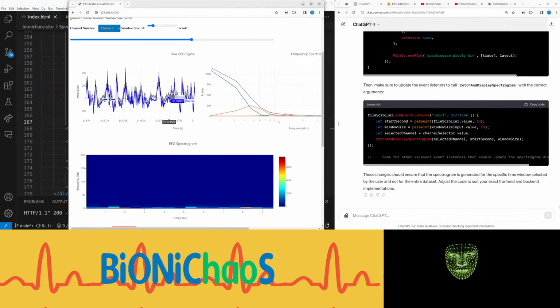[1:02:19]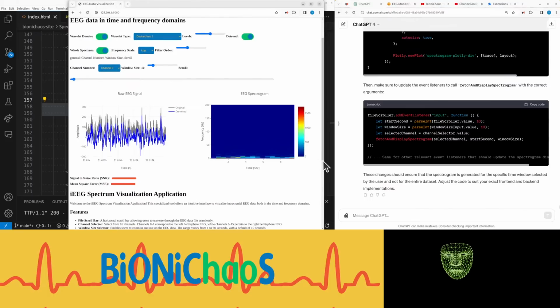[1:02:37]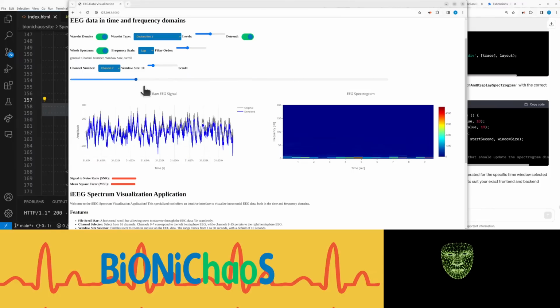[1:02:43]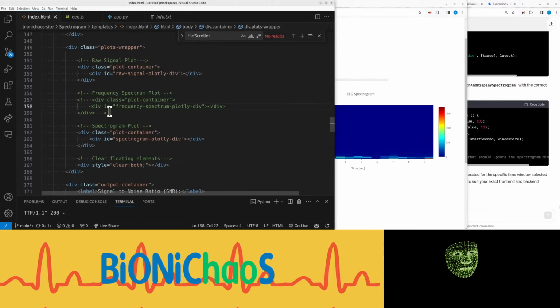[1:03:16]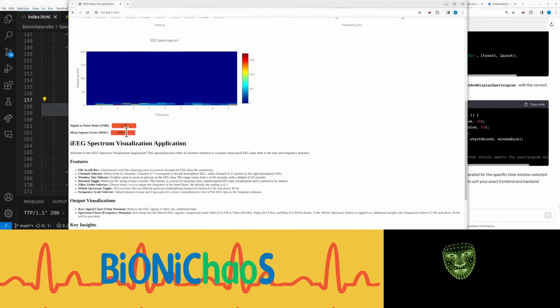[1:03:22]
Just get rid of that. Oops, just get rid of that. We also don't need log spectrum. Linear log, yeah, could change that scale. That's displayed. Okay, what? Called elsewhere? No. What's the problem?
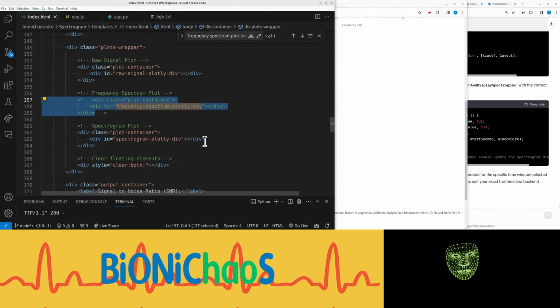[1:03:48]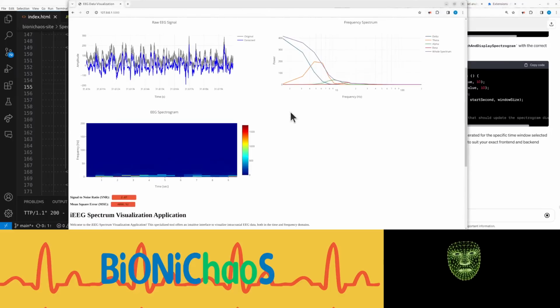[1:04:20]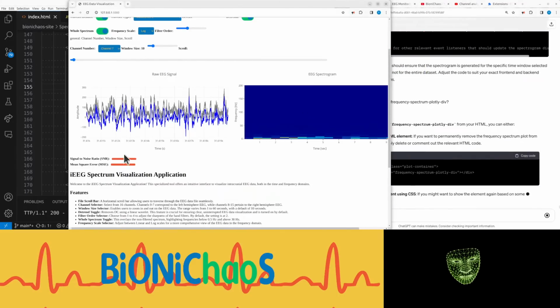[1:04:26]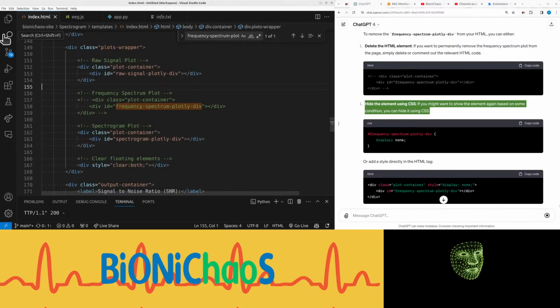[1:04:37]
How to remove... I want to remove this second plot while everything else is still shown correctly. Currently it's messing up those numbers there. Don't know what's up with that. Yeah, delete that. Hide the element in CSS. So we haven't touched a CSS file in a while. Just copy it quickly.
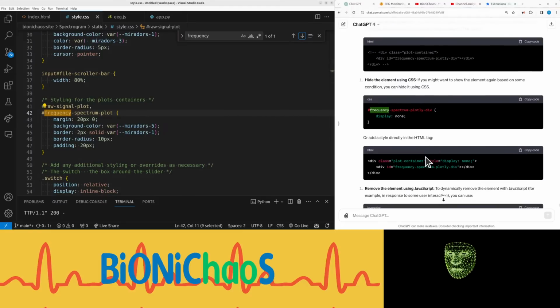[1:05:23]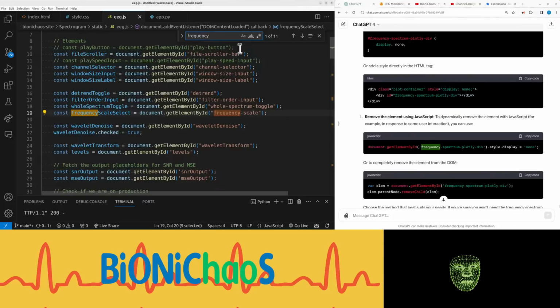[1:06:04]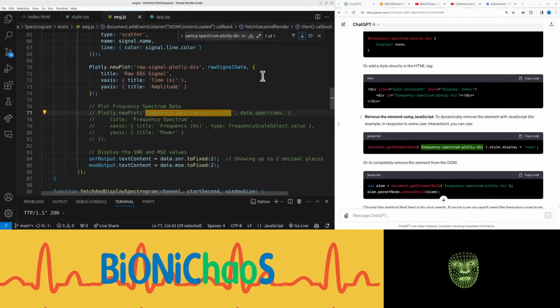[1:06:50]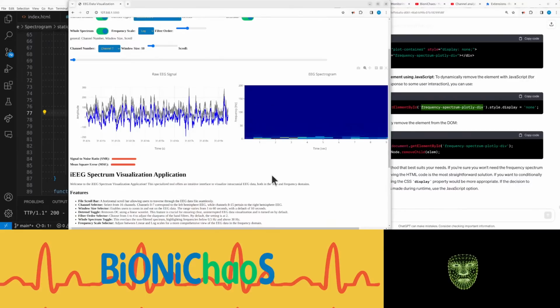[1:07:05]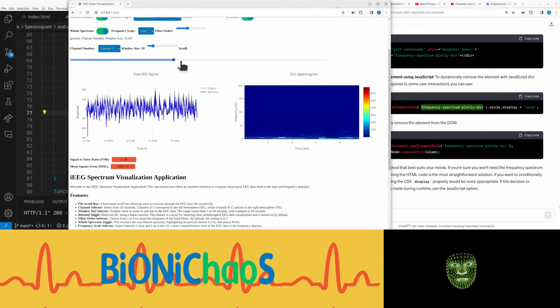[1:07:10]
So what's up? With a couple of options of the element JavaScript. Right, to fix the JavaScript. Don't need that. Okay, that should still... Alright, now this one's working as well. It's good. Yeah, it's a bit grainy.
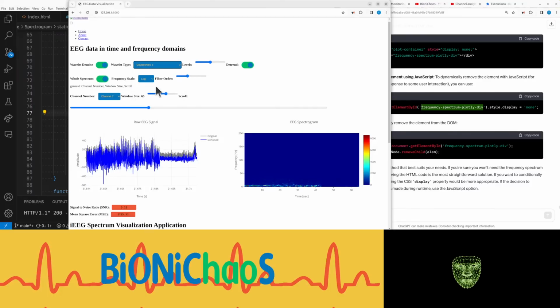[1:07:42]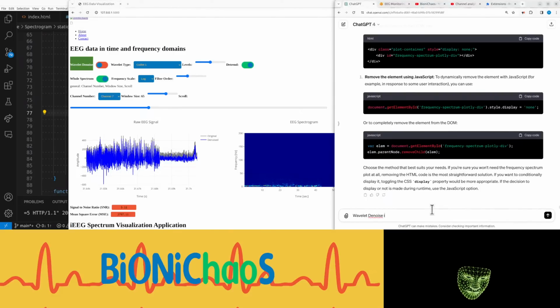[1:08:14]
Should be switching. Yeah, the wavelet denoise doesn't do anything anymore. Let's go one by one. What is it doing?
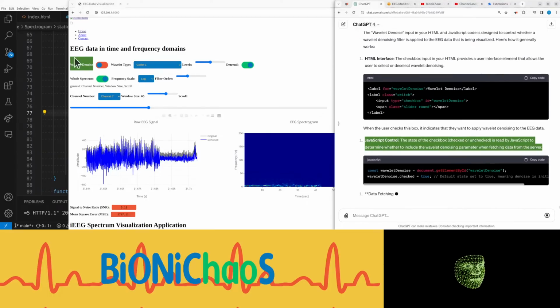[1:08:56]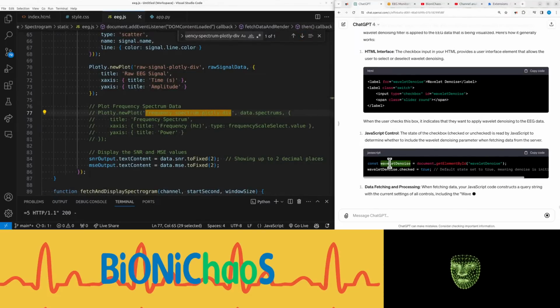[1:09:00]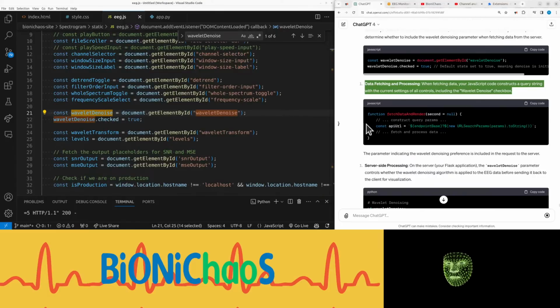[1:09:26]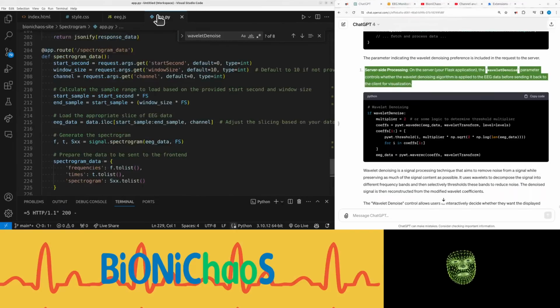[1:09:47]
JavaScript control. The state of the checkbox, checked or unchecked, is read by JavaScript to determine whether to include the wavelet denoising parameter when fetching data from the server. Data fetching and processing. When fetching data, your JavaScript code constructs a query string with the current settings of all controls, including the wavelet denoise checkbox. The parameter indicating the wavelet denoising preference is included in the request to the server. Server-side processing. On the server, your Flask application, the wavelet denoise parameter controls whether the wavelet denoising algorithm is applied to the EEG data before sending it back to the client for visualization.
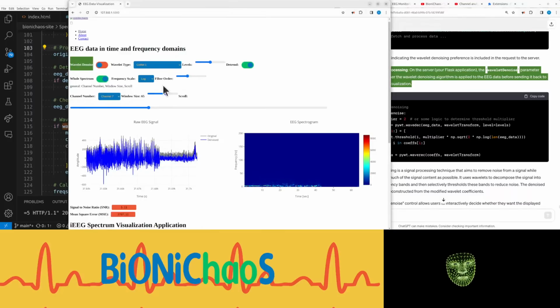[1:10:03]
Yeah, it's not actually changing anything.
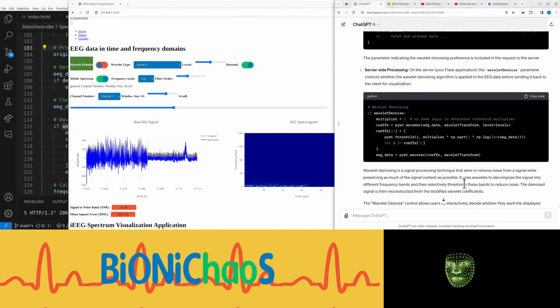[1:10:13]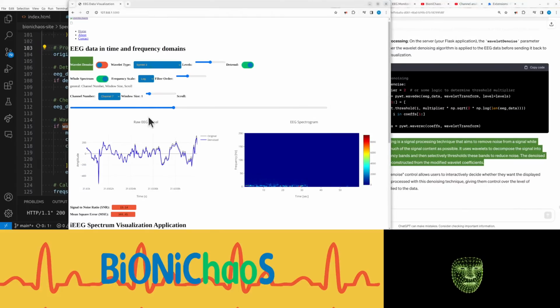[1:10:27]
Wavelet denoising is a signal processing technique that aims to remove noise from a signal while preserving as much of the signal content as possible. It uses wavelets to decompose the signal into different frequency bands and then selectively thresholds these bands to reduce noise. The denoised signal is then reconstructed from the modified wavelet coefficients.
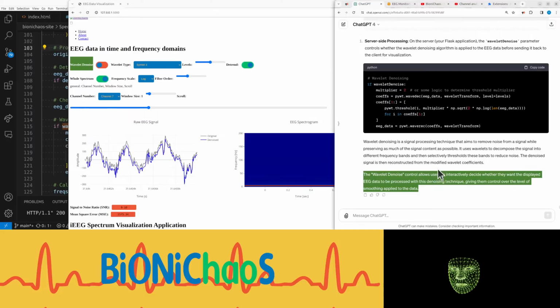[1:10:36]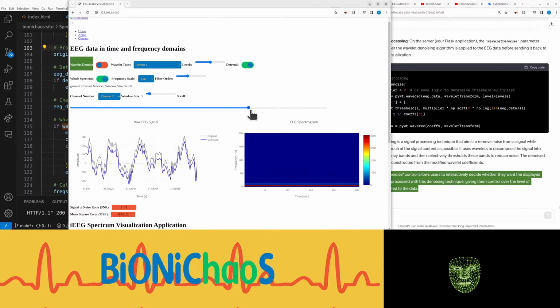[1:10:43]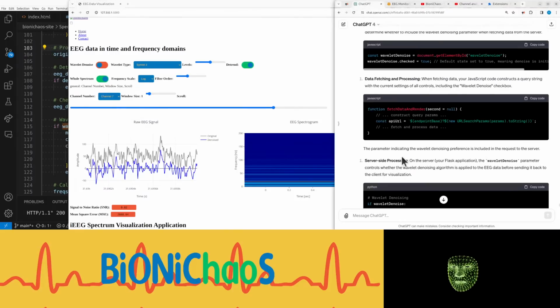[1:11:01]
The wavelet denoise control allows users to interactively decide whether they want the displayed EEG data to be processed with this denoising technique, giving them control over the level of smoothing applied to the data. Doesn't actually seem to do anything.
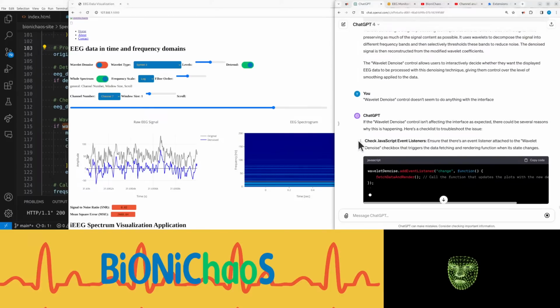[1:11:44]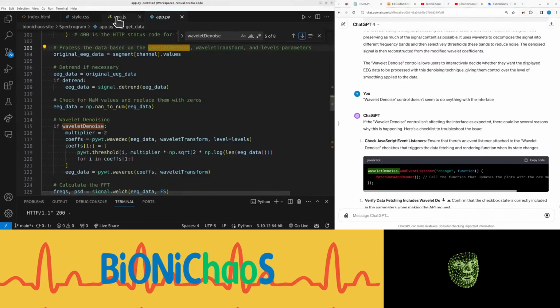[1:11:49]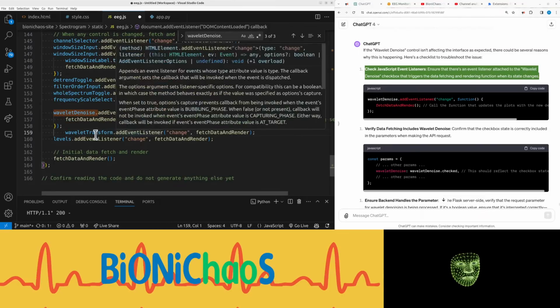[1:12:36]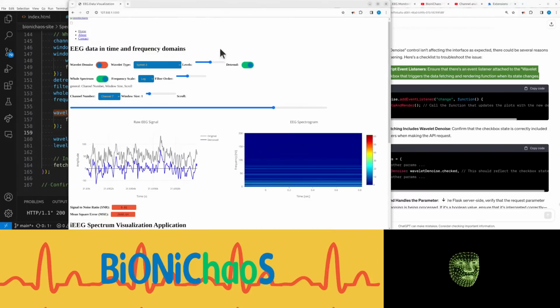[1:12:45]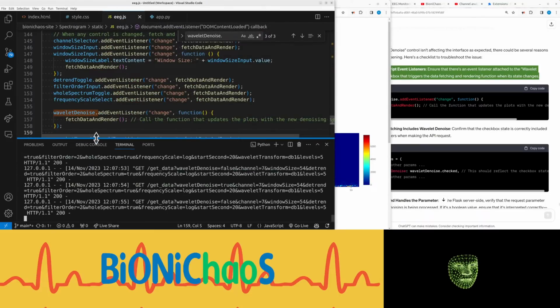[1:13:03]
JavaScript. Check JavaScript event listeners. Ensure that there's an event listener attached to the wavelet denoise checkbox that triggers the data fetching and rendering function when its state changes. Verify data fetching includes wavelet denoise. Confirm that the checkbox state is correctly included in the parameters when making the API request.
Ensure backend handles the parameter. On the Flask server side, verify that the request parameter for wavelet denoising is being processed. If it's a Boolean value, ensure that it's interpreted correctly. Request arguments are strings by default.
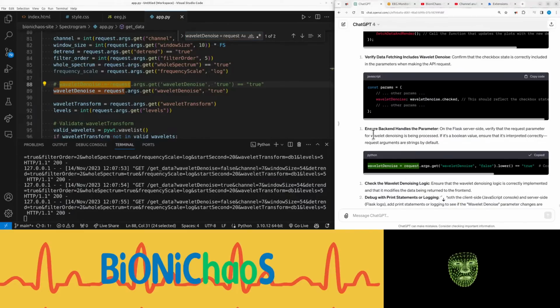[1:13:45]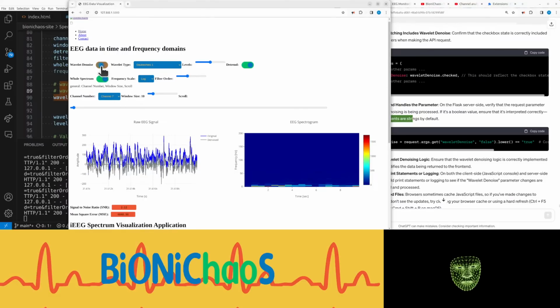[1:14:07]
Right. Now it's actually changing the thing. To change it in all the other applications, I think I only have the one. Be back in a sec.
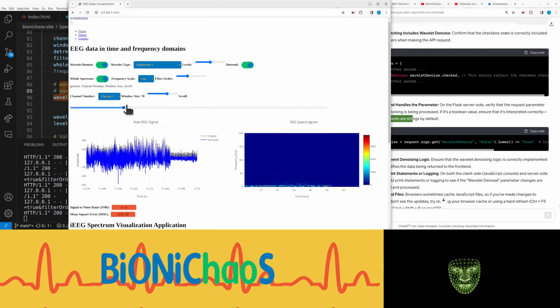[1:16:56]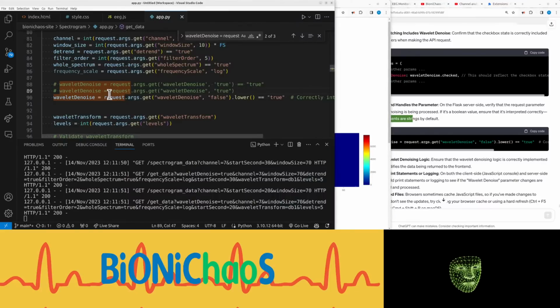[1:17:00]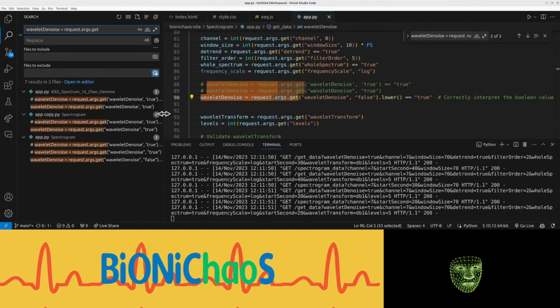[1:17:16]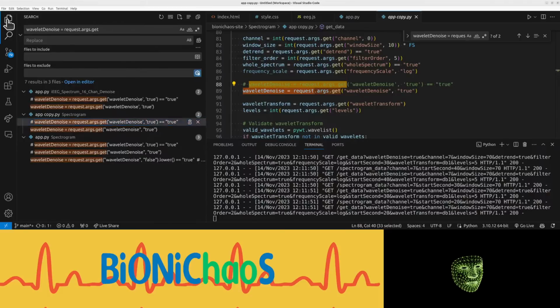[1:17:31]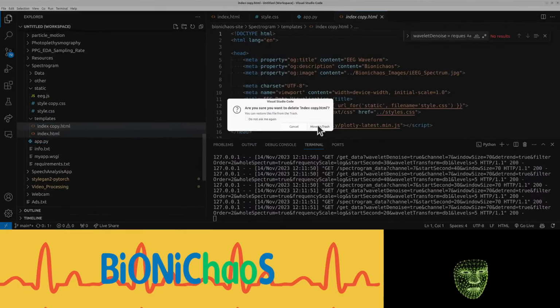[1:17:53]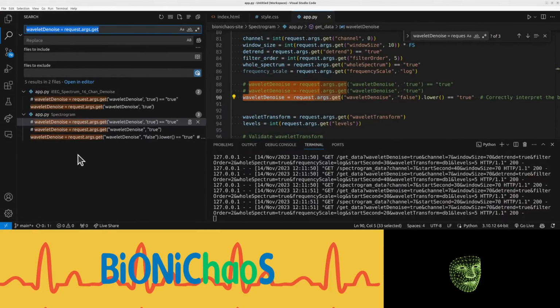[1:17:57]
Okay, where were we? This wavelet denoise thing. Arguments, just find it throughout the project. Okay, that copy can go. Split up the wrong one. Right. Then I also have it in the noise. We'll set it as well.
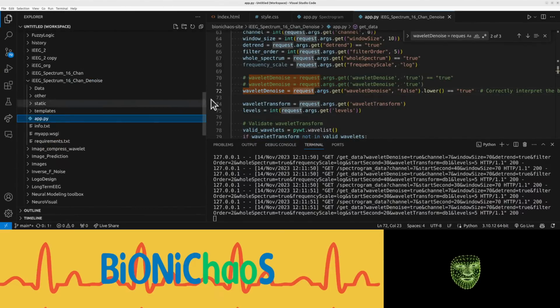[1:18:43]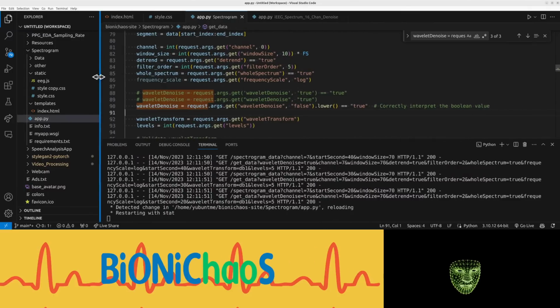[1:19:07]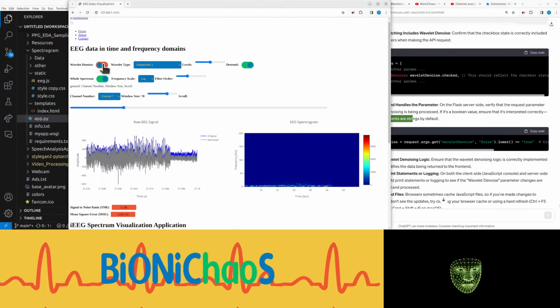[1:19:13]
One run at the moment, we'll assume it's working okay. Not testing is a great idea, isn't it? Well, because we're essentially testing the same thing over here. It's working okay.
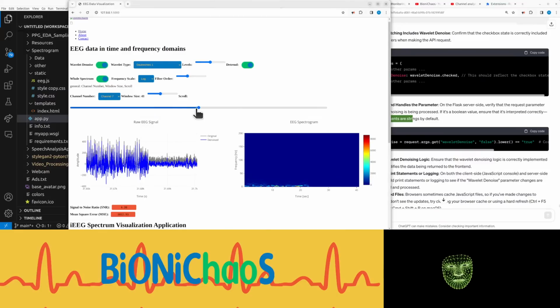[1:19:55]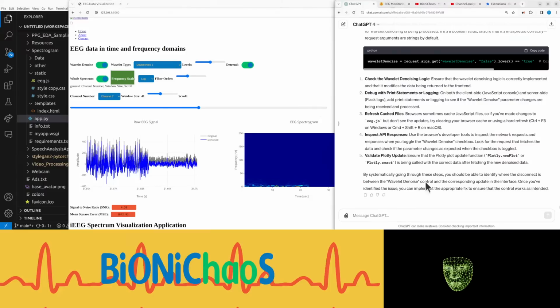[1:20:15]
Now the spectrogram is only being affected by the scroller. Frequency scale to change spectrogram y-axis. Should be straightforward, I don't know.
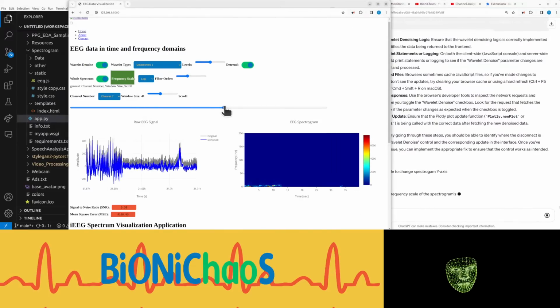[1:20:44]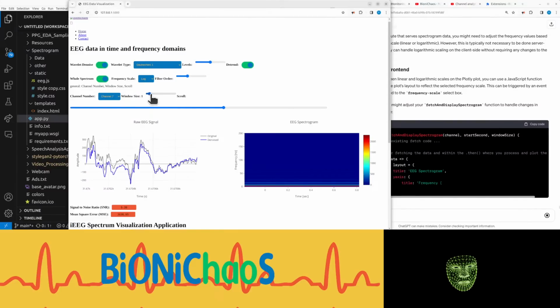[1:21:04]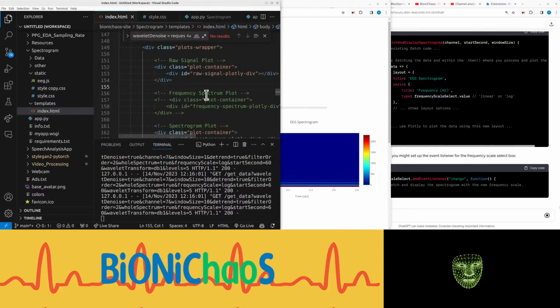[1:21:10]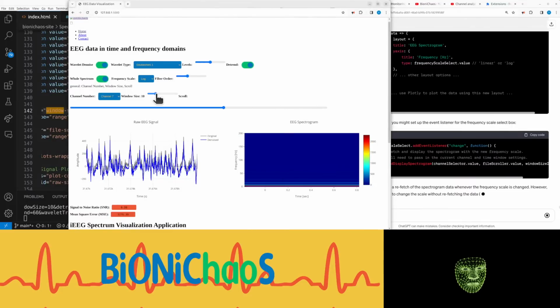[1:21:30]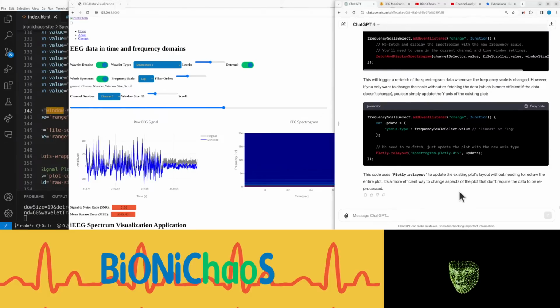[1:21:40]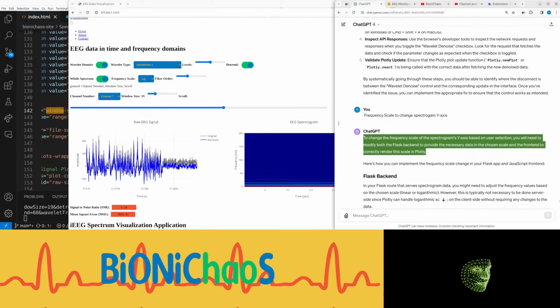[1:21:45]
Window size. HTML. Steps on one, so why? I actually have to click it. To change the frequency scale of the spectrogram's y-axis based on user selection, you will need to modify both the Flask backend to provide the necessary data in the chosen scale and the front end to correctly render this scale in Plotly.
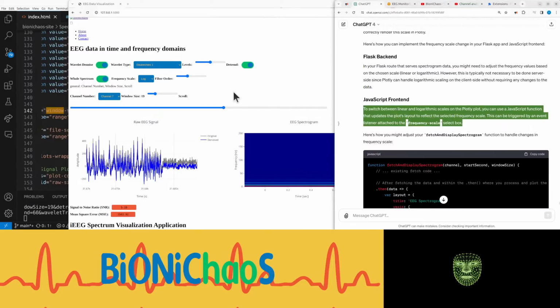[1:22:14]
In your Flask route that serves spectrogram data, you might need to adjust the frequency values based on the chosen scale, linear or logarithmic. However, this is typically not necessary to be done server-side since Plotly can handle logarithmic scaling on the client side without requiring any changes to the data.
JavaScript front-end to switch between linear and logarithmic scales on the Plotly plot. You can use a JavaScript function that updates the plot's layout to reflect the selected frequency scale. This can be triggered by an event listener attached to the frequency scale select box. Here's how you might adjust your fetch and display spectrogram function to handle changes in frequency scale.
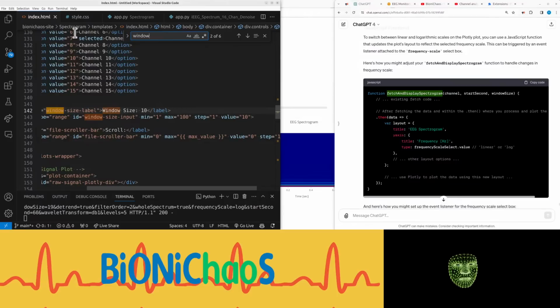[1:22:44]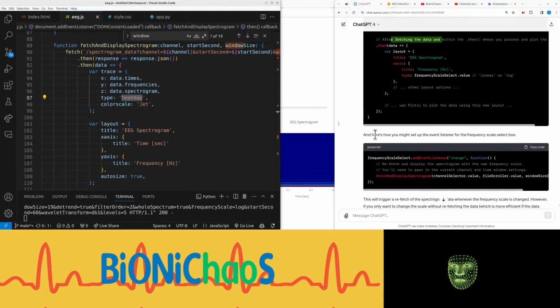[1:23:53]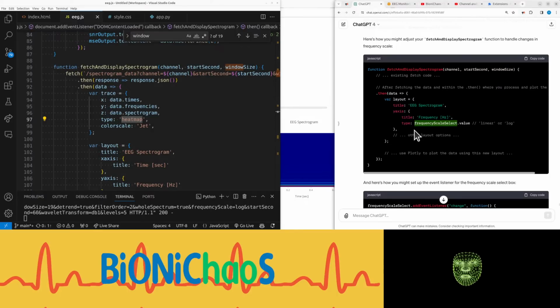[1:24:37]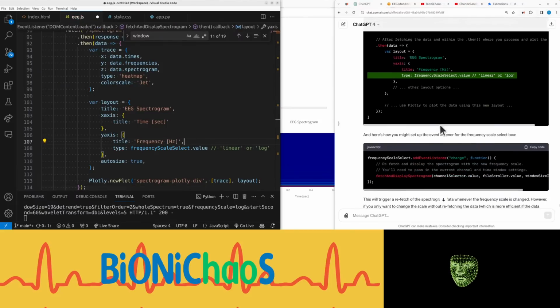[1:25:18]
Okay, so in JavaScript, fetch and display spectrogram. After fetching the data, and within that, then, where you process and plot the data. is already type in trace. The comma there.
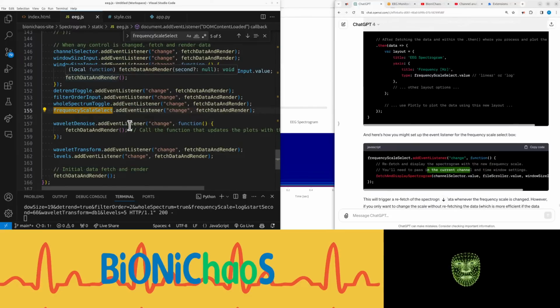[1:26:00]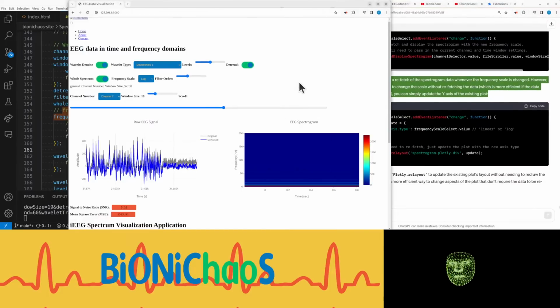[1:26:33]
And here's how you might set up the event listener for the frequency scale select box. Add event listener change function. Instead of that, doing this. This will trigger a refetch of the spectrogram data whenever the frequency scale is changed. However, if you only want to change the scale without refetching the data, which is more efficient if the data doesn't change, you can simply update the y-axis of the existing plot.
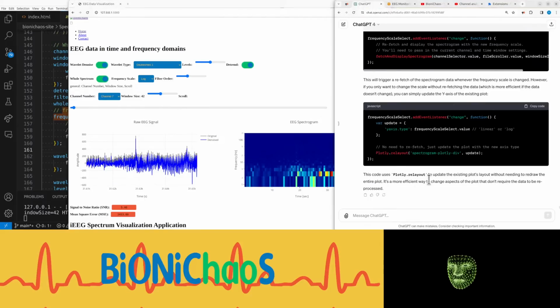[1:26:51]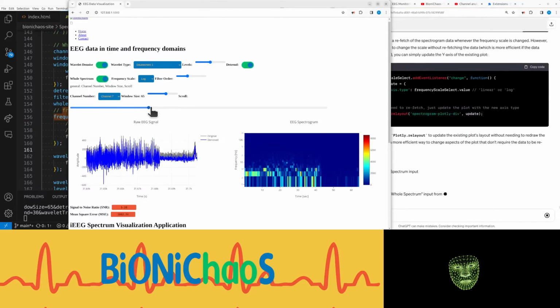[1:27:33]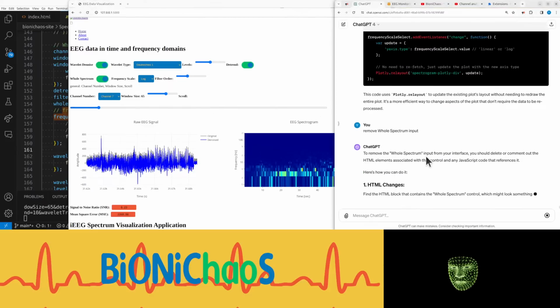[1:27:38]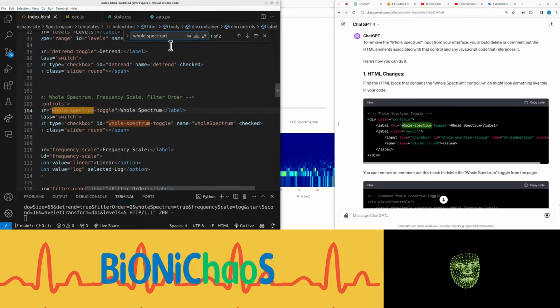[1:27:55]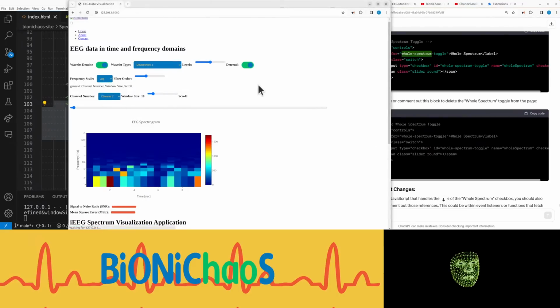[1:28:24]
No, it's working okay. Whole spectrum can be removed. Whole spectrum input. Whole spectrum toggle or something. In HTML. Yeah, this bit. Get rid of that. Okay, now we don't see. What? That's not cool.
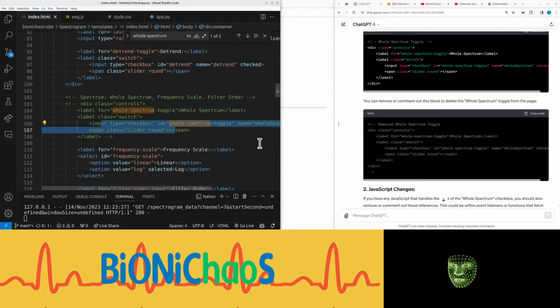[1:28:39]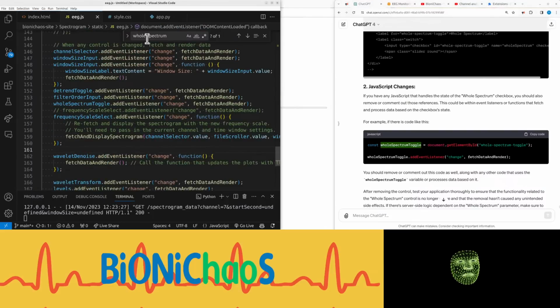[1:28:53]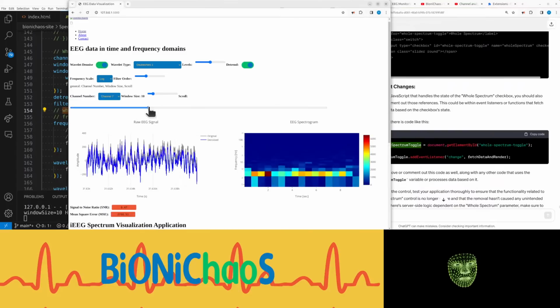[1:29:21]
If you have any JavaScript that handles the state of the whole spectrum checkbox, you should also remove or comment out those references. This could be within event listeners or functions that fetch and process data based on the checkbox state. This one. Right. That's showing okay.
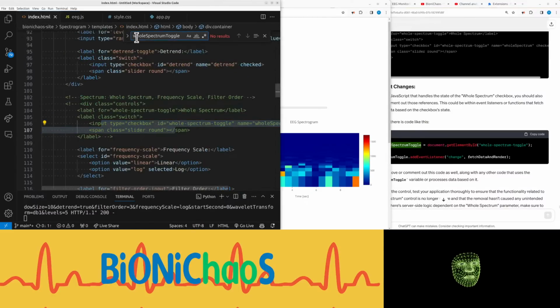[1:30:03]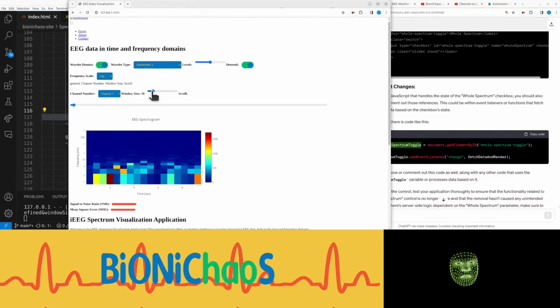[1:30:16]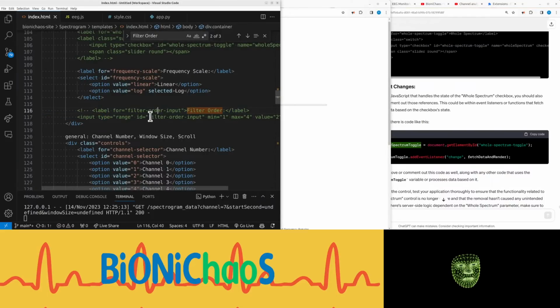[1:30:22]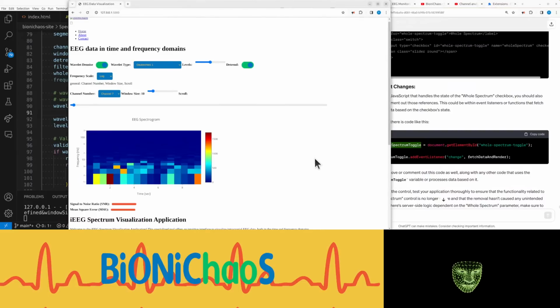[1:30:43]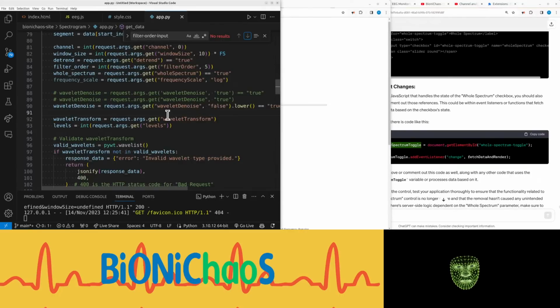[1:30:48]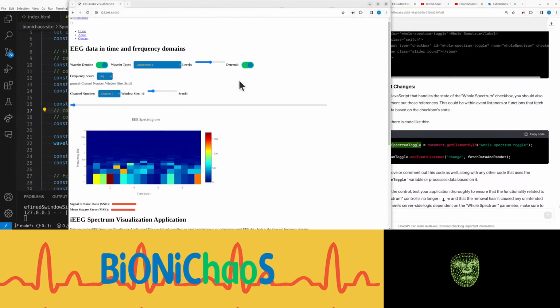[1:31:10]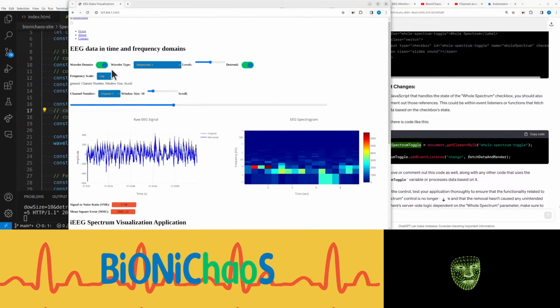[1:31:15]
Linear, log. Log is default, that's good. Add this filter order was only affecting the EEG spectrum. Okay, get rid of it here. The input. Okay, this still doesn't work. Okay, that's working. Yeah, that's okay. That's for the denoising. Frequency scale is working.
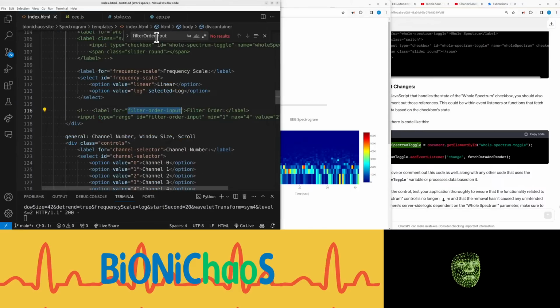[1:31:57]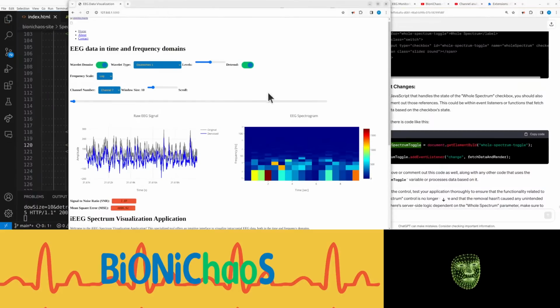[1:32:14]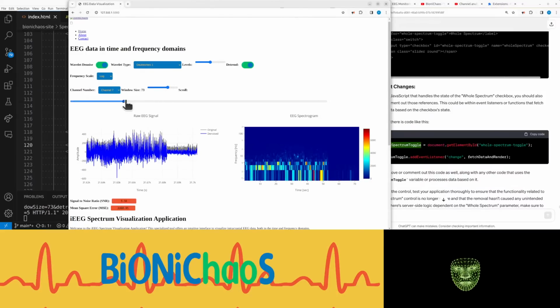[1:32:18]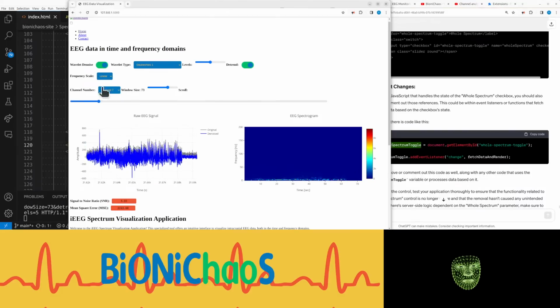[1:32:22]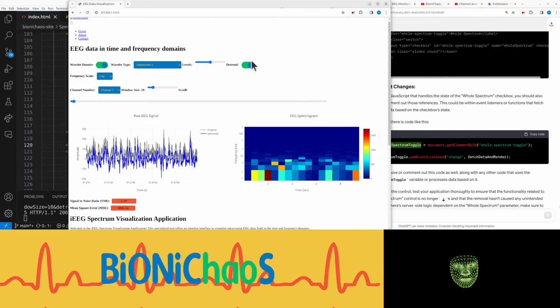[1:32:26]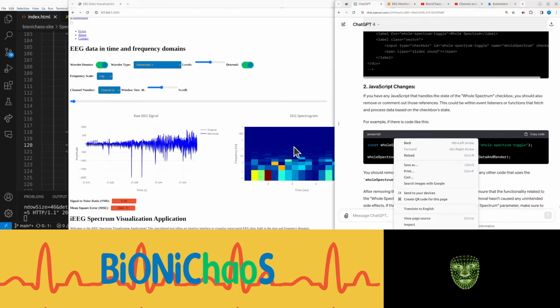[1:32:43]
Where's this coming from? It's like that. Show it. Don't need this. Yeah, log is default. That's fine. Those are okay. Frequency scale is okay. Channel number. Right, now the main thing is the EEG spectrogram.
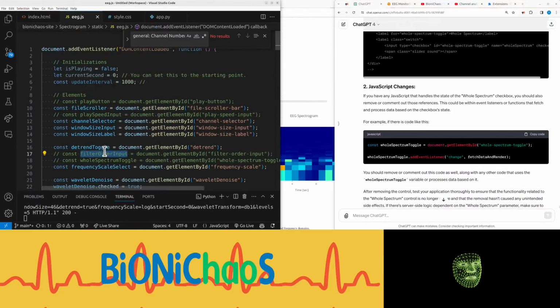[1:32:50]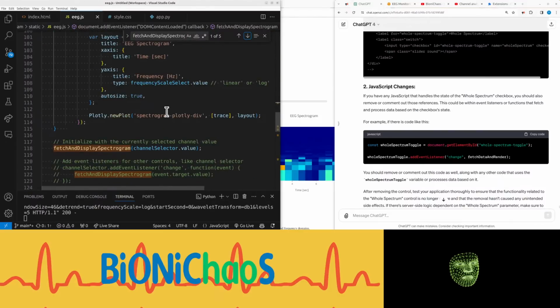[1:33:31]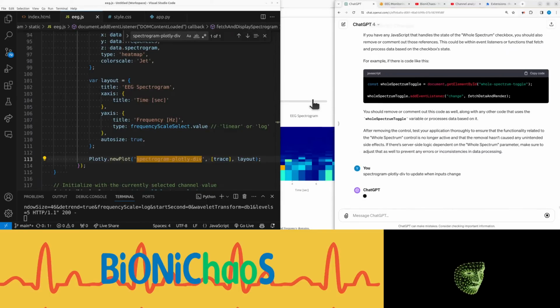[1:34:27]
What's this thing called? A plotly div. JavaScript, we have it over there. We needed to update when inputs change. Currently it's only updating when the file scroller is being used.
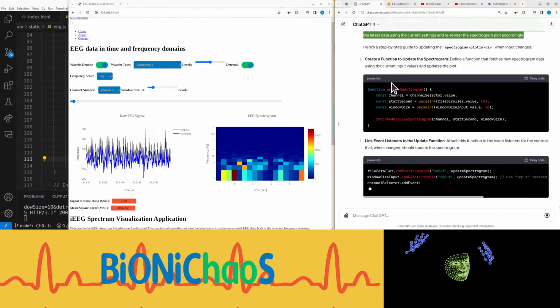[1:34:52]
To update the spectrogram plotly div when inputs change, you need to ensure that the event listeners for your input controls call a function to update the spectrogram. This function should fetch the latest data using the current settings and re-render the spectrogram plot accordingly. Here's a step-by-step guide to updating the spectrogram plotly div when input changes.
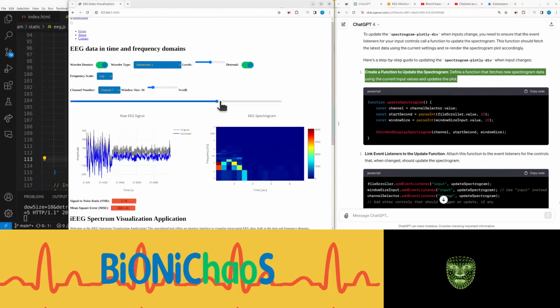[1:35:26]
Yeah, how to do it. Do I need a separate thing? Don't think I need a separate thing. Create a function to update the spectrogram. Define a function that fetches new spectrogram data using the current input values and updates the plot. I already have a function for that.
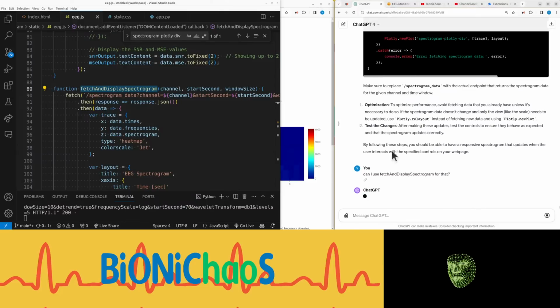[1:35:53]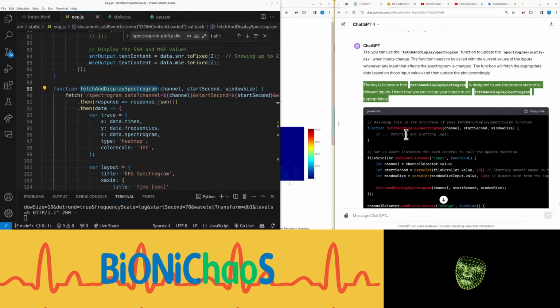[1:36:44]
Yes, you can use the fetch and display spectrogram function to update the spectrogram plotly div when inputs change. The function needs to be called with the current values of the inputs whenever any input that affects the spectrogram is changed. The function will fetch the appropriate data based on those input values and then update the plot accordingly. The key is to ensure that fetch and display spectrogram is designed to use the current state of all relevant inputs. Here's how you can set up your inputs to call fetch and display spectrogram appropriately.
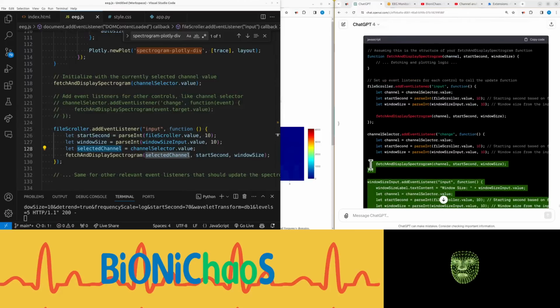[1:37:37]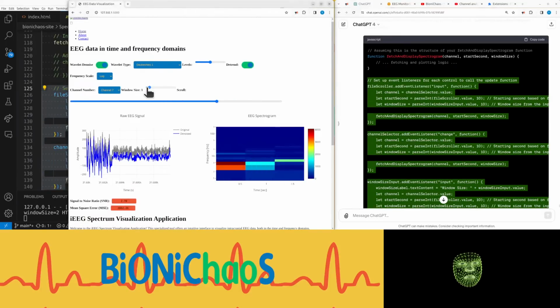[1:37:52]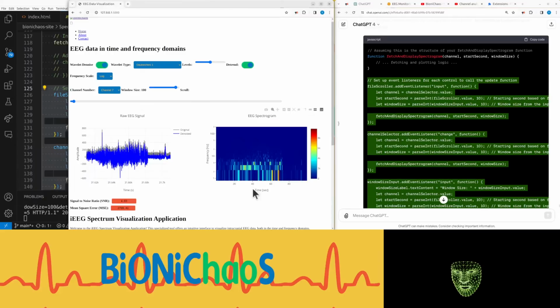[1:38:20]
This is the whole seizure spectrogram in the frequency domain, by the way. So when we have the window size at the full 100, you should in theory not be able to scroll through the file because the whole segment is loaded. And this is how it looks on different channels. On some channels you see more, on some channels you see less of it. And there's a problem with this one because of that spike there.
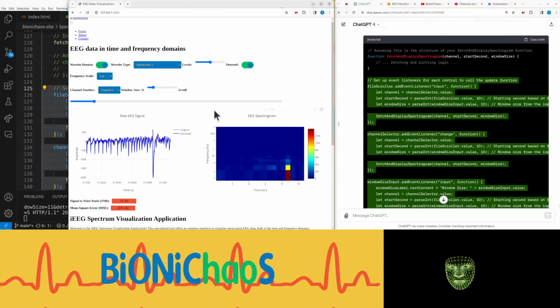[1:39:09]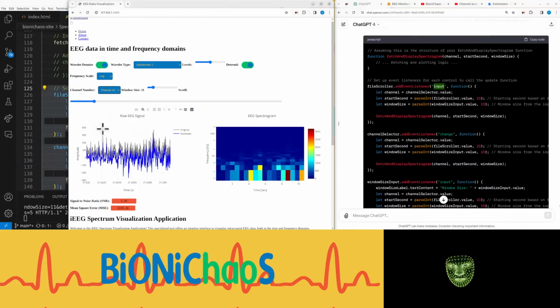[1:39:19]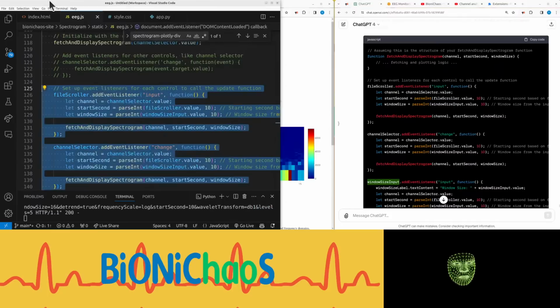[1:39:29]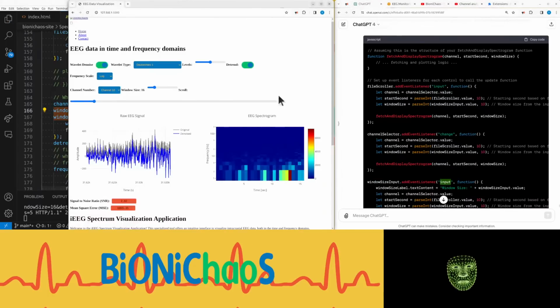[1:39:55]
So also this is updating with input instead of change. Channel selector with change, window size with input. We have the window size, add... Change this to input quickly, just to see. Yeah, it is becoming much slower.
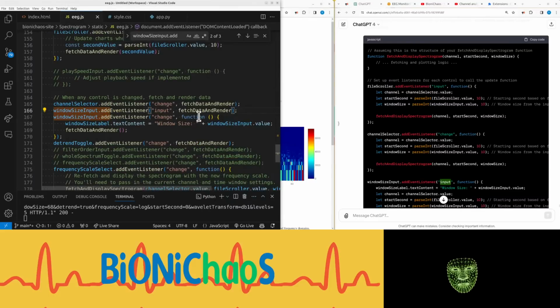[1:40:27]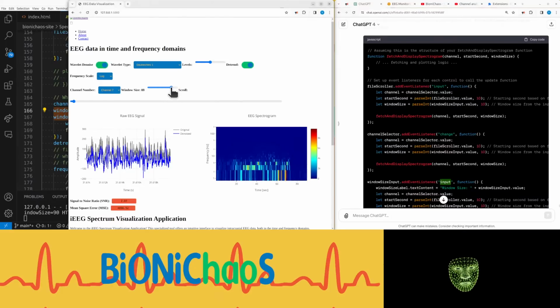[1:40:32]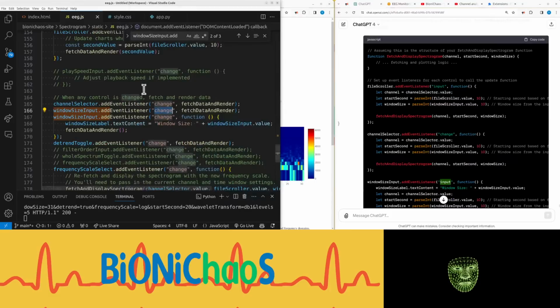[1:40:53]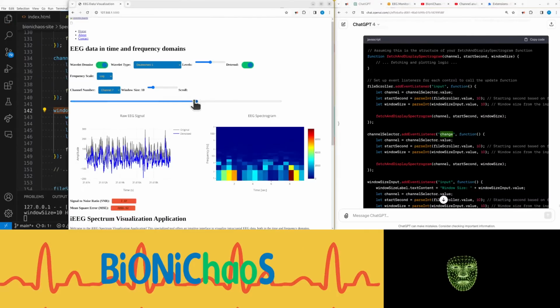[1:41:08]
And I can hear my server going. Yeah, there is much more data in there and it becomes less responsive as well. I'll just stick to change. It's kind of nice to see it changing live, but then it's taking a toll on my server. I'll get a huge electricity bill. So I might actually do a change in this spectrogram as well. Yeah, so I actually have to release the mouse button for the changes to take effect, which is fine.
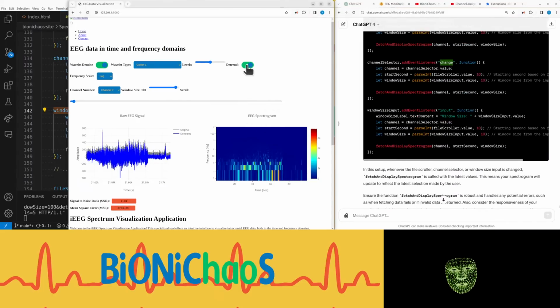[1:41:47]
Now this spectrogram also should change when you turn denoise on and off. As in, you don't turn them on and off because they're both displayed on the EEG signal chart, but for the spectrogram it will display one and then the other. Yeah, that's the linear frequency scale. That's a logarithmic for the seizure on channel 7. That's what it looks like on channel 11. So now a channel, get the picture.
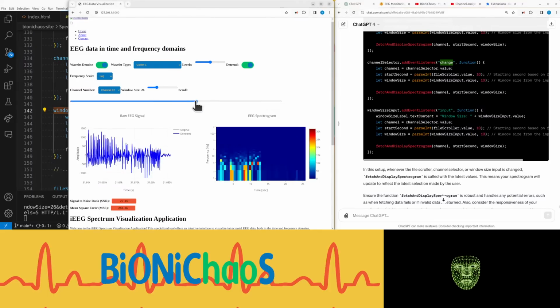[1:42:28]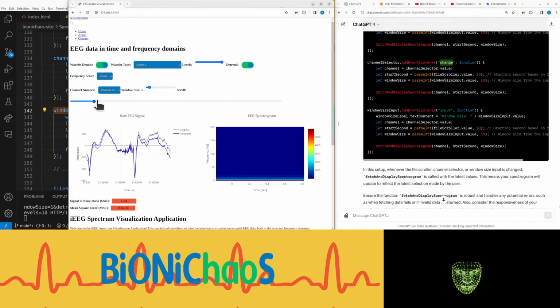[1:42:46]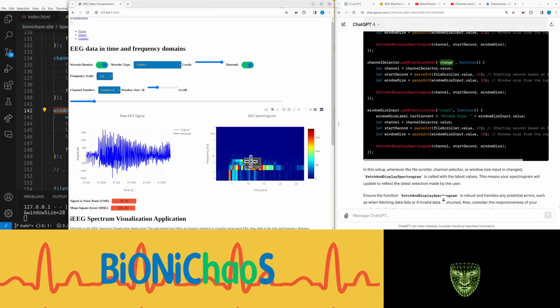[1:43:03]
So the only controller that's working with input instead of change is the scroller, updating the numbers. All other controls, you actually have to release the button for them to change anything. Yeah, log scale for the frequency here is default because you can see better what's going on, especially when there's a seizure.
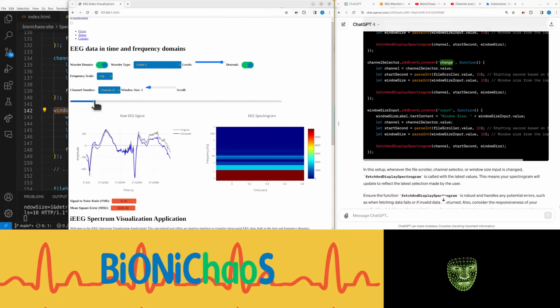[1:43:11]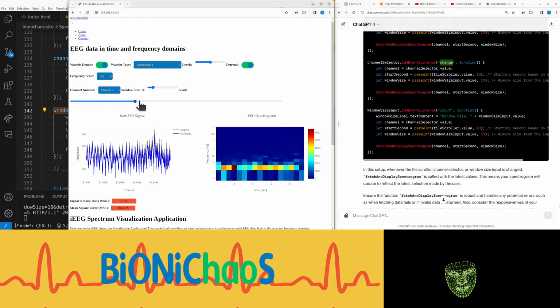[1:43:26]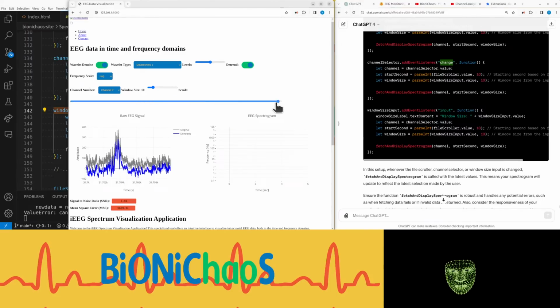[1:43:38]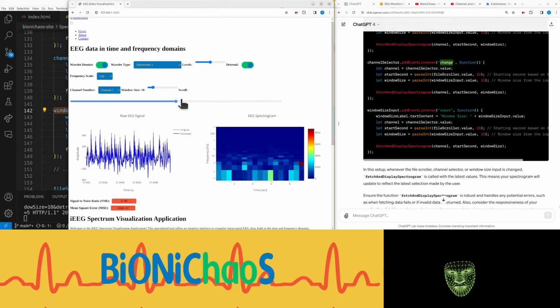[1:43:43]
By the way, this is reloading the page, this is default. This is just showing you the low frequency component because the colors there are automatically scaled. Yeah, it's getting up to 6,000 during seizure and only 1,500 when there's no seizure. Just gives me these errors at the edges. We'll fix it a bit later.
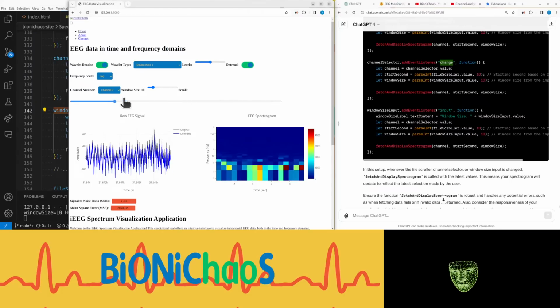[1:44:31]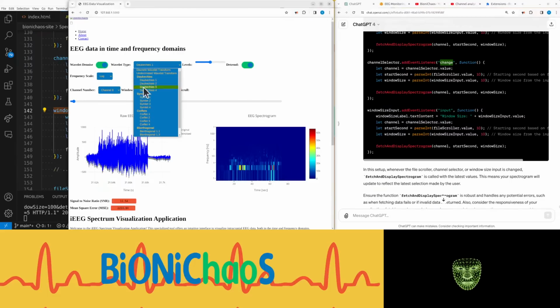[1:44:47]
Yeah, so you see here you have this nice and stable line through the seizures, but that's not always the case. So if you want to train something, a seizure detector algorithm, you will use that line. Problem is, it's not always there. That's the end of the seizure as well. But yes, there's higher energy in the low frequency components, that's for sure, throughout the seizure. Yeah, this channel 7, it's not great as well. Some of them will be better than others.
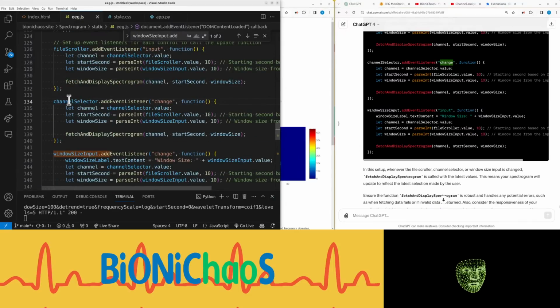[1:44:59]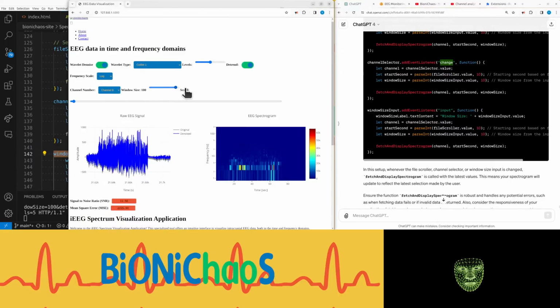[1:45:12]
Check something. It shows like the window size. Yeah, that's fine. It's the 3 things that are changing the spectrogram. Yeah, channel number, the file scroller, and window size. And frequency scale, of course, but that's done in a different way.
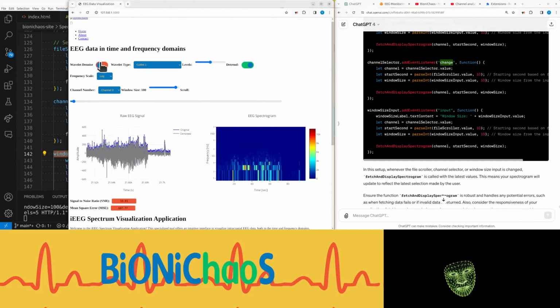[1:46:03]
Now for wavelet denoise. Okay, the spectrogram should also be affected by wavelet denoise, because when it's on, it should be taking the denoised signal, and when it's off, the spectrum should show the original one. How do we turn this into a prompt? Denoise should also affect the spectrogram.
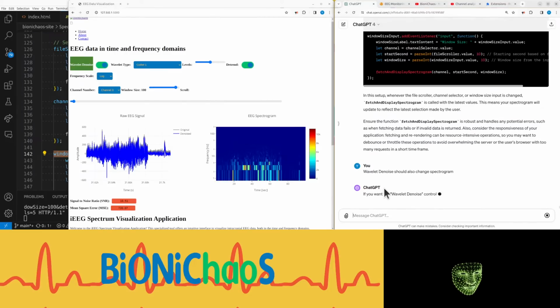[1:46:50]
We might not prime it with any more information, see if it gets the context and be able to tell straight away if it understands what we mean.
If you want the wavelet denoise control to also change the spectrogram, you need to ensure that the event listener for the wavelet denoise checkbox calls the fetch and display spectrogram function with the current input values. Here's how you can set up the event listener for the wavelet denoise checkbox. Yeah, I'm not entirely convinced it understands what we are trying to do.
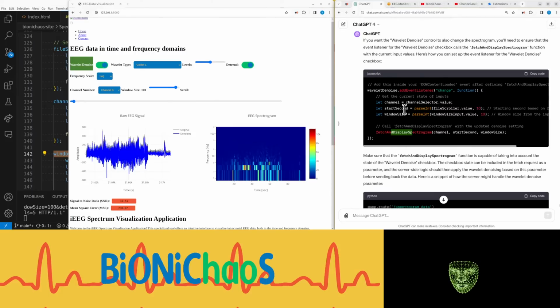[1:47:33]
Yeah, we already have that, pretty sure. Make sure that the fetch and display spectrogram function is capable of taking into account the state of the wavelet denoise checkbox. The checkbox state can be included in the fetch request as a parameter, and the server-side logic should then apply the wavelet denoising based on this parameter before sending back the data. Here is a snippet of how the server might handle the wavelet denoise parameter. Yeah, I'm still not convinced it understands.
With the wavelet denoise checkbox linked to your fetch and display spectrogram function, toggling the checkbox should now update the spectrogram according to the denoising setting. Remember to handle the checkbox state both on the client side, when sending the request, and on the server side, when processing the request.
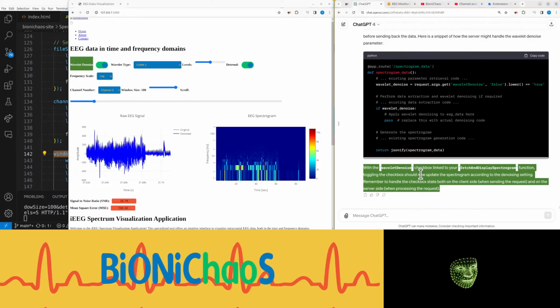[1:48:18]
Alright, so the question is, well, how the spectrogram will update in relation to wavelet denoise on and off. I mean, we know what the answer for that should be.
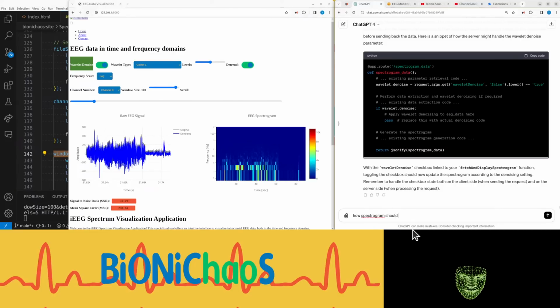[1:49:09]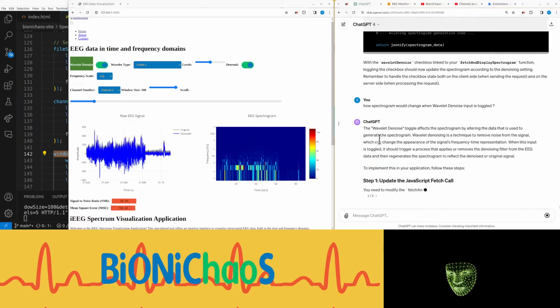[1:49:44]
By the way, sorry for that horrible noise. That's a car outside parking. This horrible screeching sound in the suspension, whatever, an old car. Remember to remove it when video editing.
Getting back to this. So we asked what will happen when the wavelet denoise input is toggled, how it will change the spectrogram.
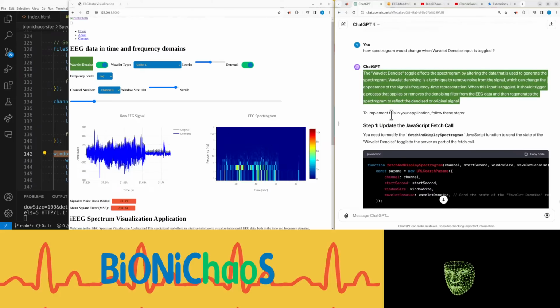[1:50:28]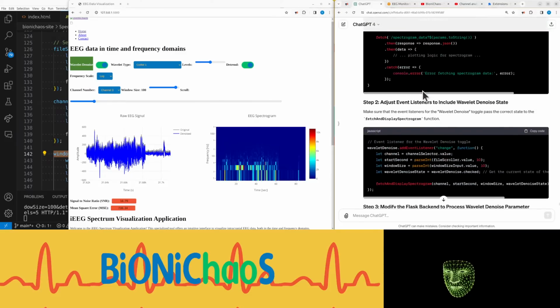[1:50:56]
The wavelet denoise toggle affects the spectrogram by altering the data that is used to generate the spectrogram. Wavelet denoising is a technique to remove noise from the signal, which can change the appearance of the signal's frequency-time representation. When this input is toggled, it should trigger a process that applies or removes the denoising filter from the EEG data and then regenerates the spectrogram to reflect the denoised or original signal. Okay, so it seemed to be answering more or less correctly.
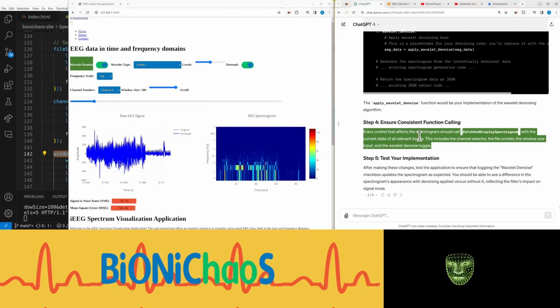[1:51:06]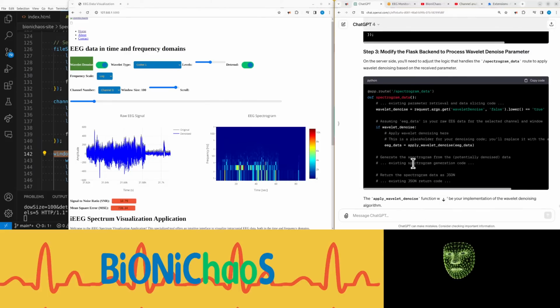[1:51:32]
Every control that affects the spectrogram should call fetch and display spectrogram with the current state of all relevant inputs. This includes the channel selector, the file scroller, the window size input, and the wavelet denoise toggle. After making these changes, test the application to ensure that toggling the wavelet denoise checkbox updates the spectrogram as expected. You should be able to see a difference in the spectrogram's appearance with denoising applied versus without it, reflecting the filter's impact on signal noise. Right. So we're ready.
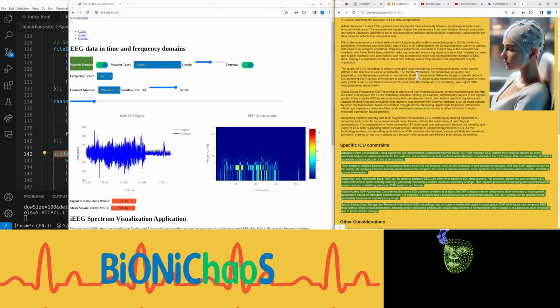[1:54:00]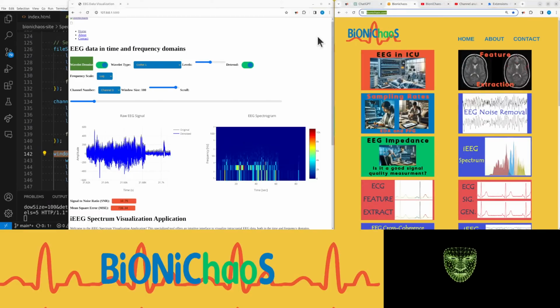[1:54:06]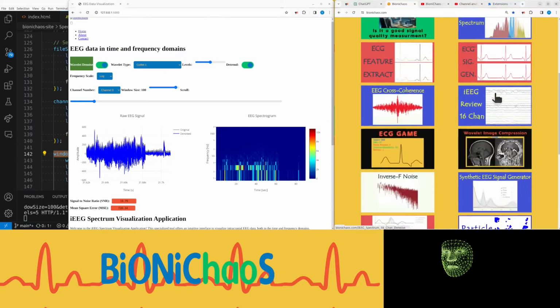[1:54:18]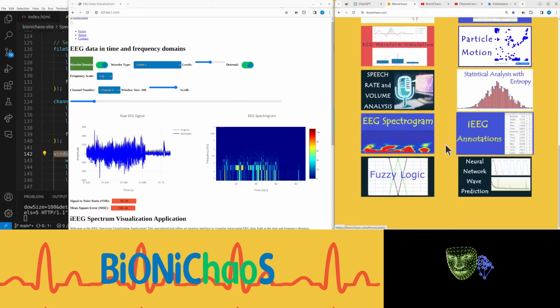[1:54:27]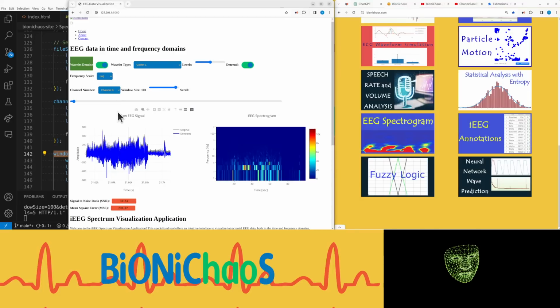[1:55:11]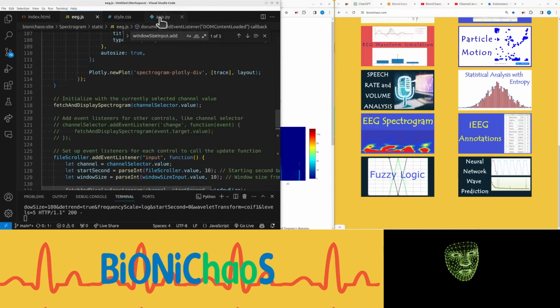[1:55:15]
Yeah, we also want to know why the spectrum looks so granular, so low res. We had something like this in LabVIEW before, so surely, yeah, we could just change the settings. Check it out straight away. Actually using SciPy. What are we using? I don't think we use this function as well, do we?
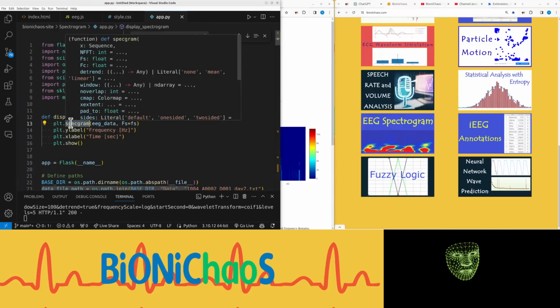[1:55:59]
Yeah, this is coming from plot. Where's the PLT matplotlib? There's a function called specgram. This is the one we are using. I don't think so. Surprised we're not using the SciPy thing. Get rid of that. Get this actual function.
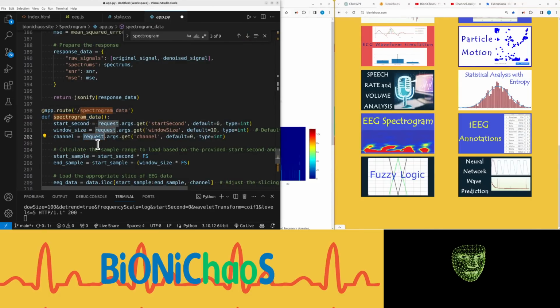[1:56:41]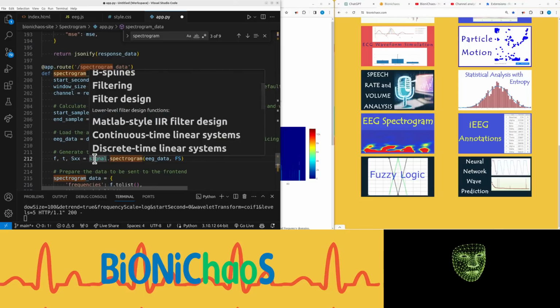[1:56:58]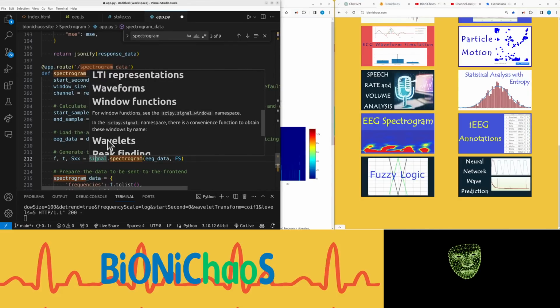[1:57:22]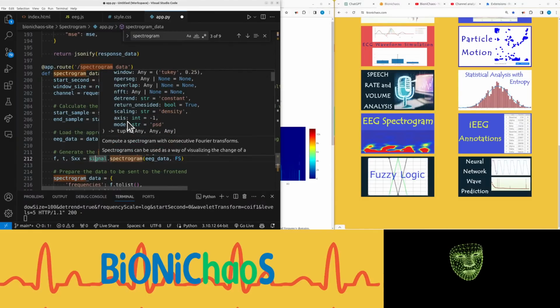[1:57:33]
Yeah, we're using signal spectrogram. Yes, that's what it does. And signal. Okay, it's a SciPy function. It's a MATLAB style IIR filter. Now the actual parameter can be, so it's returning a one-sided, that's okay. Detrend function in build. Yeah, this window.
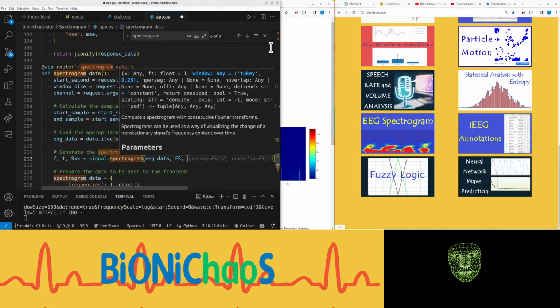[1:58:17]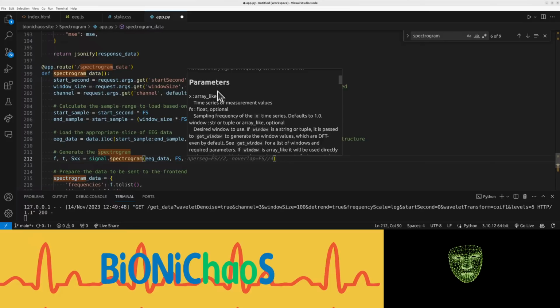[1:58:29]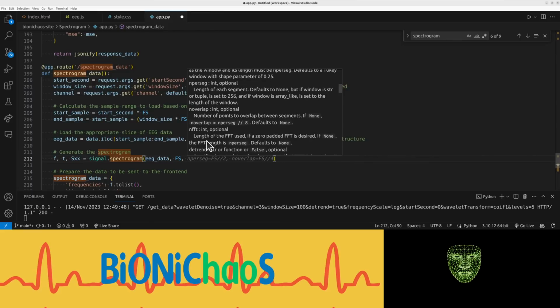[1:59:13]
Okay, this is GitHub Copilot suggesting stuff. That's the segment. Where was it? Window. Optional length of each segment, defaults to none, but window is string. or tuple is set to 256? Number of points to overlap.
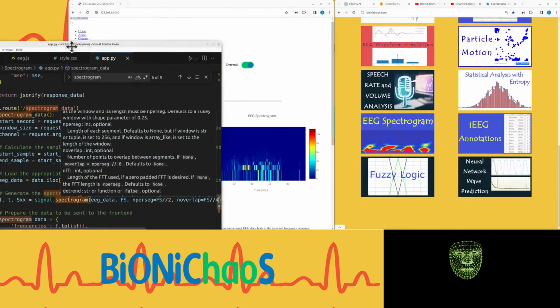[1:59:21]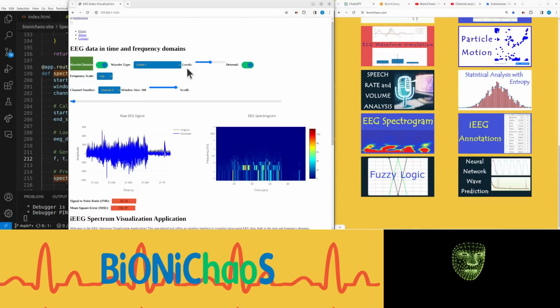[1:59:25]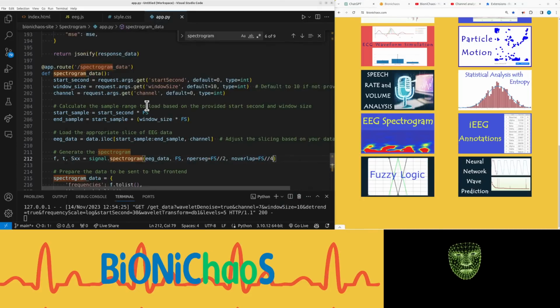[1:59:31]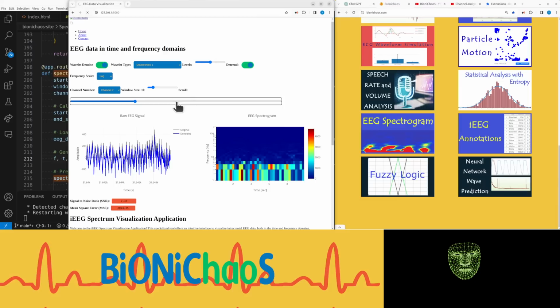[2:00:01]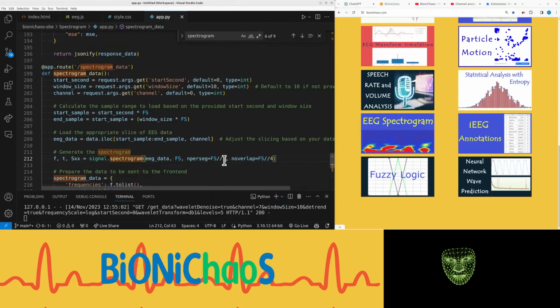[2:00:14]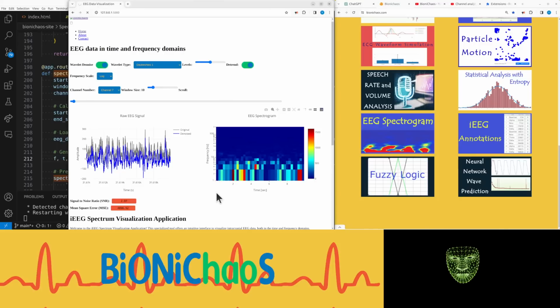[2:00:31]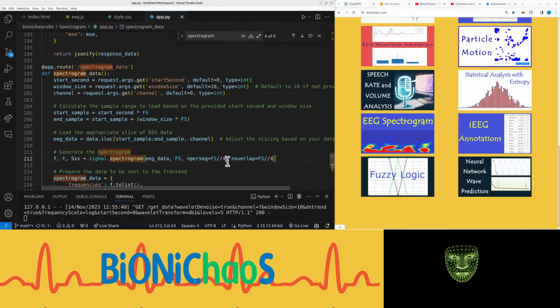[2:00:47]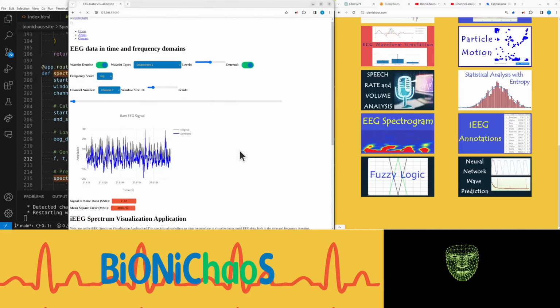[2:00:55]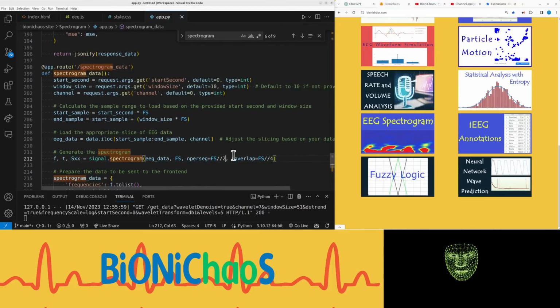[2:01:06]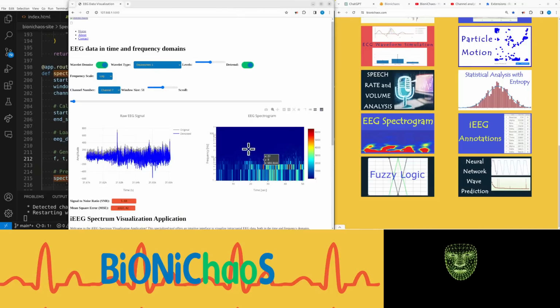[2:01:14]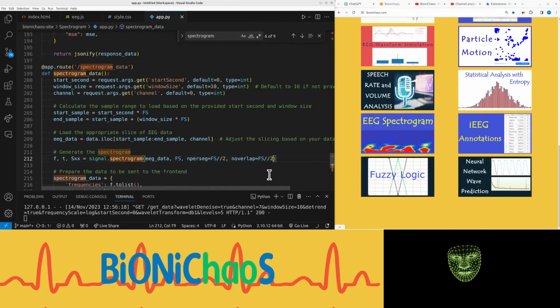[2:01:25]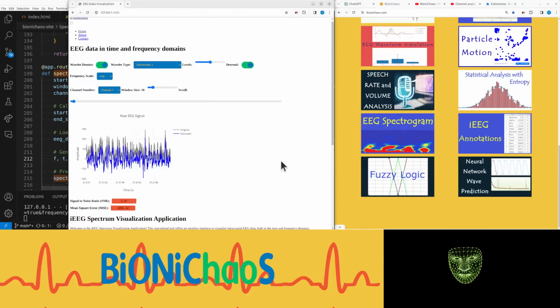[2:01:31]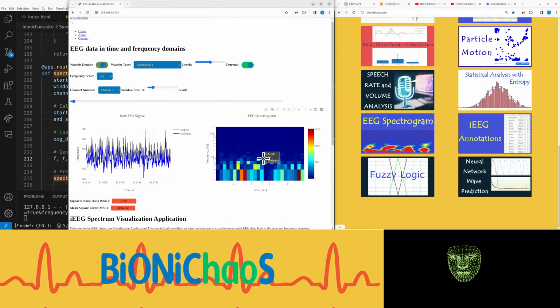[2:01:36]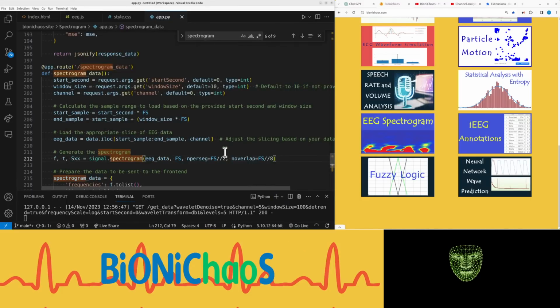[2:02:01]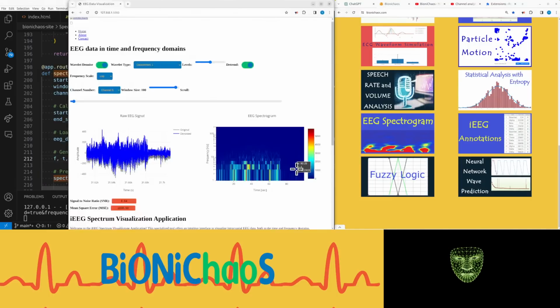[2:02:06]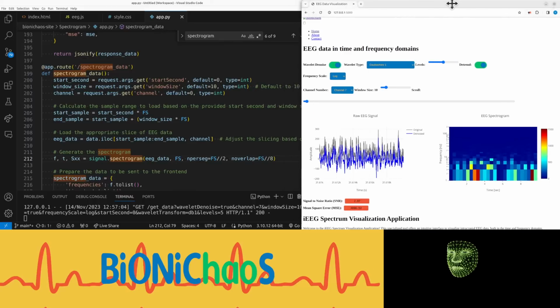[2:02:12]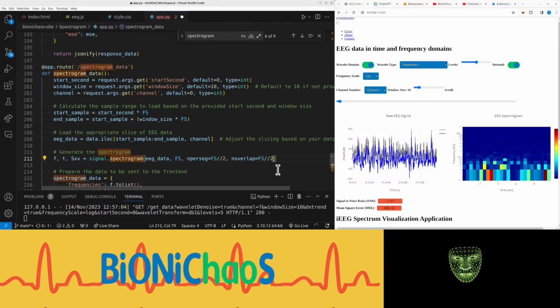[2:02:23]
For a window of 10. I have those 10. Yeah, now we have more. Yeah, we could have those parameters potentially as inputs. Anyway, we'll try to improve on this, and we will continue next time. Could add more of these parameters as inputs.
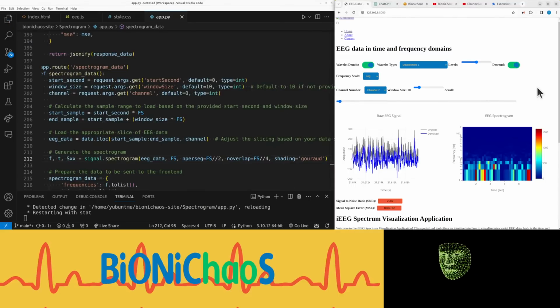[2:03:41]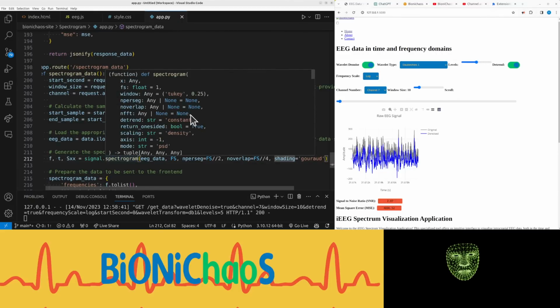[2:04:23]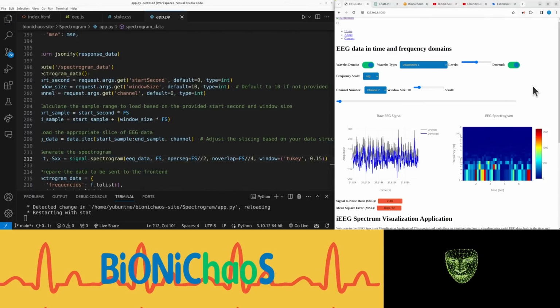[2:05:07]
Shading is even not in there. Yeah, that's true. Yeah, this window. It's the default option. Doesn't seem to change much.
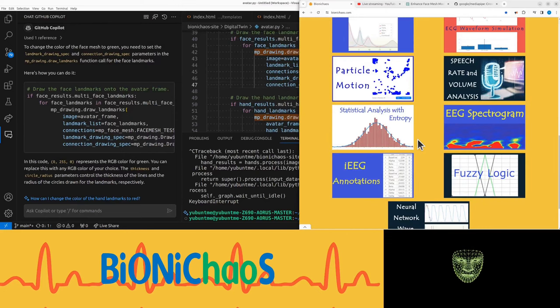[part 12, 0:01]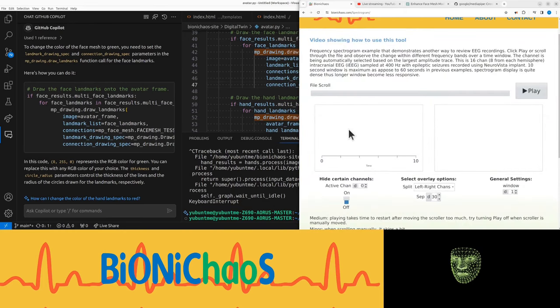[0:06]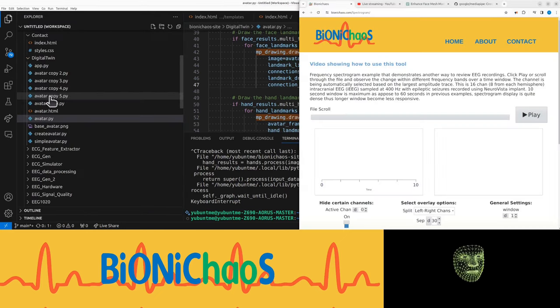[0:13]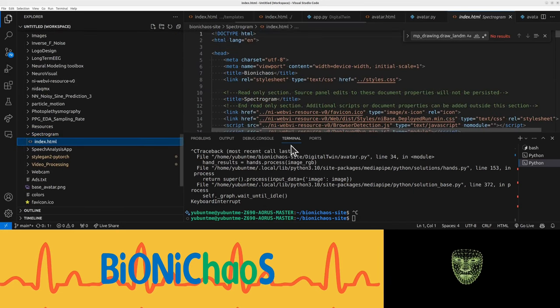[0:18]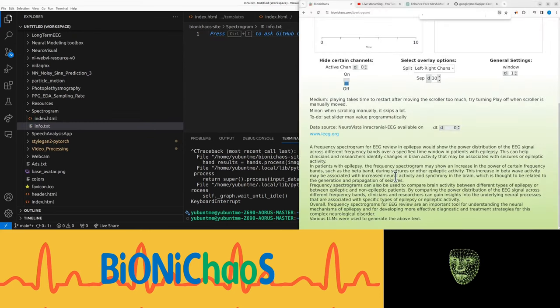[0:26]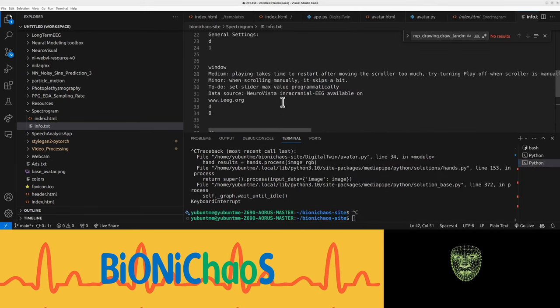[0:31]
So we have those couple of apps that we still need to get up and running. One of them is this spectrogram EEG using the same file, which is called spectrogram. It just has that index HTML. Let's start with the info text. It's mentioning LabVIEW, so let's get rid of LabVIEW. So we have this description. Okay, we have this info.
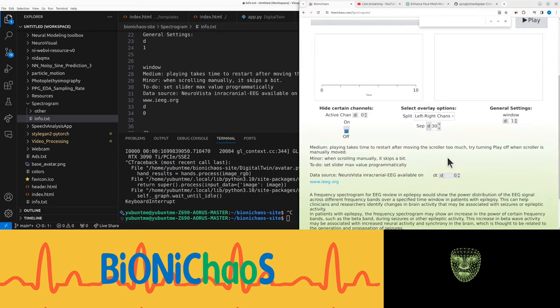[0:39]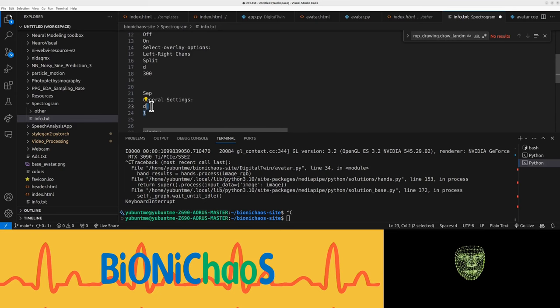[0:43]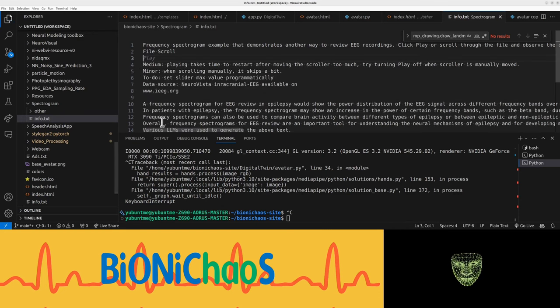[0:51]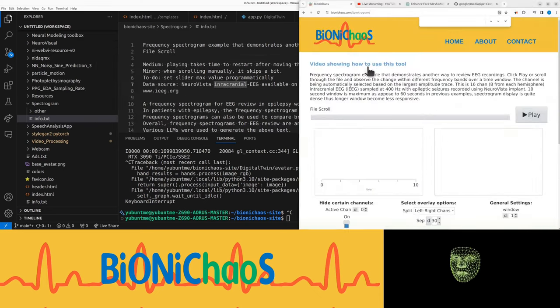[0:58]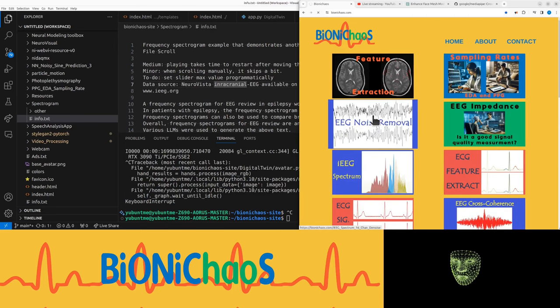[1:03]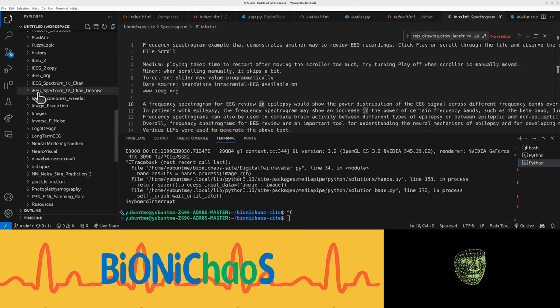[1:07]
Do we need to keep that? Maybe, maybe not. We can get rid of it for now. Yeah, we won't have the play button. Right, let's keep the description to a minimum. And what else do we need to do? First of all, we could just take, not this one, the last working app, spectrum denoise. Yeah, we can copy this one.
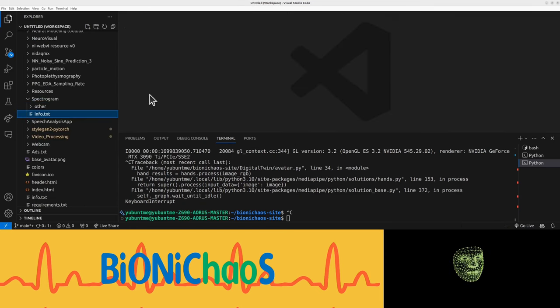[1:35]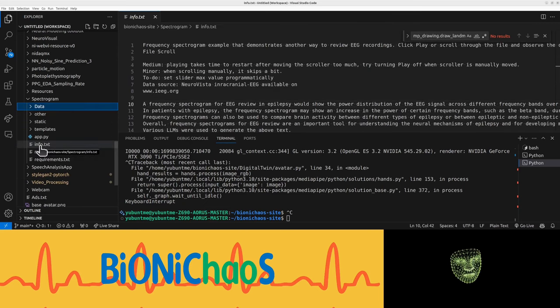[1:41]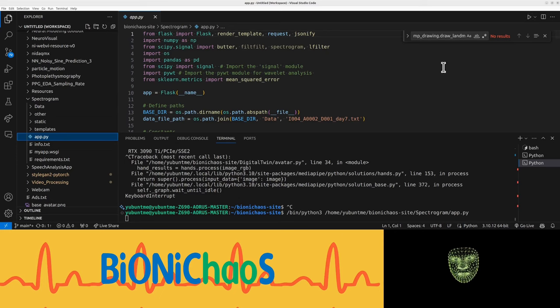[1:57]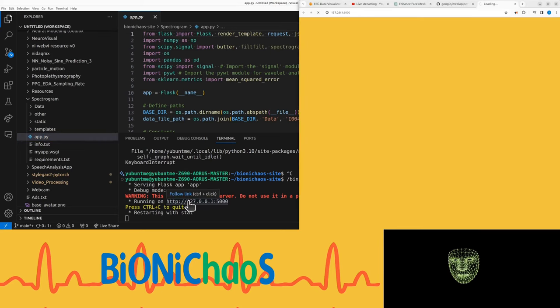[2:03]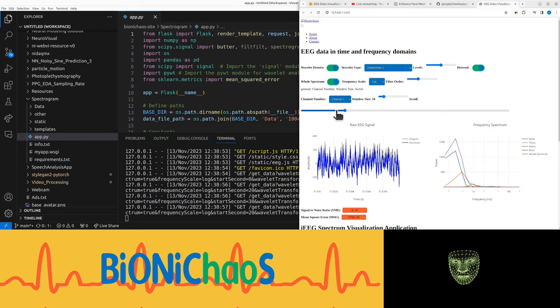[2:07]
We have the data, we need the data, templates, app, and requirements. Let's close all for a sec. Right, info text. Okay, so instead of this, let's run this quickly just to see. It's running okay. Guess that's what we have in development.
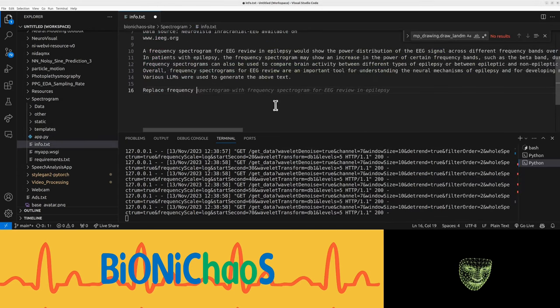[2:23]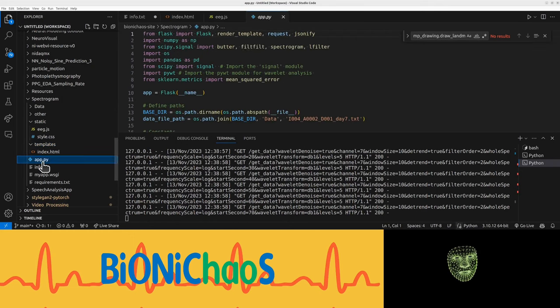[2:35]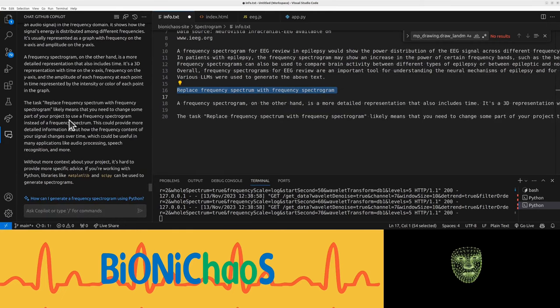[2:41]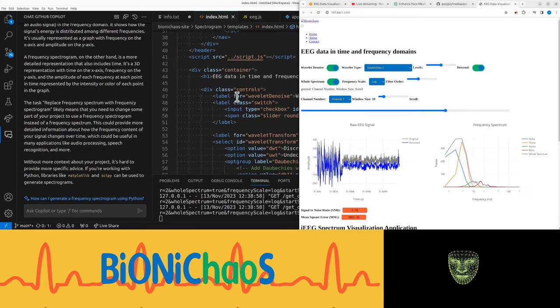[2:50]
And essentially what we want to do is replace the frequency spectrum with a spectrogram. Frequency spectrum with frequency spectrogram. That's right. We have this EEG JavaScript and the HTML and the actual Python application. Copilot, yes, we want to replace. We should be doing it. It was actually called frequency spectrum. It's that second chart.
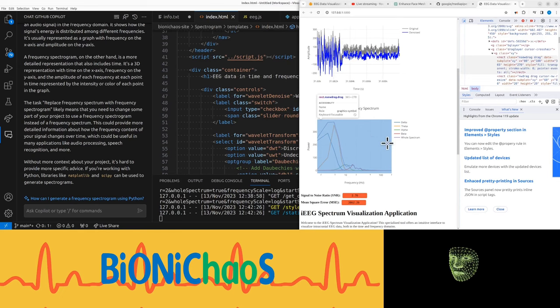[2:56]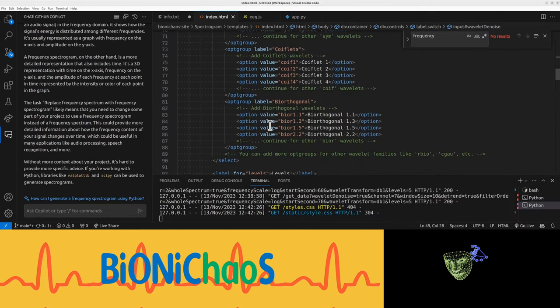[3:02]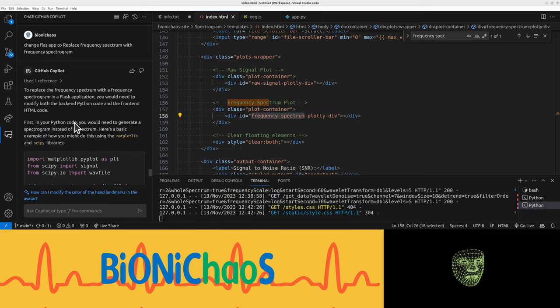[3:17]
Is it actually called some sort of container? It's the second container up here. Can I change Flask app to replace frequency spectrum with a frequency spectrogram? You might have an option for it, but in the Python code, we import more stuff. We already have SciPy signal, don't we? Create spectrogram. Well, it's not an audio file. This code specific to app.py provides a code summary specific to the Flask application. Yeah, that's the correct file.
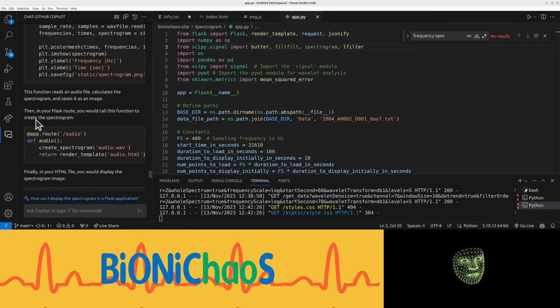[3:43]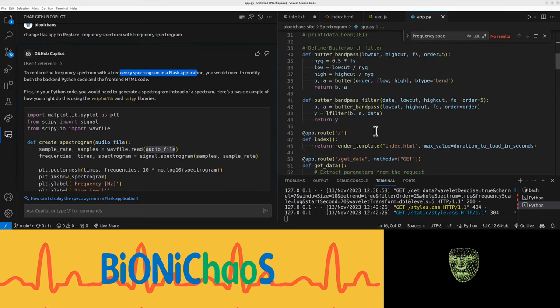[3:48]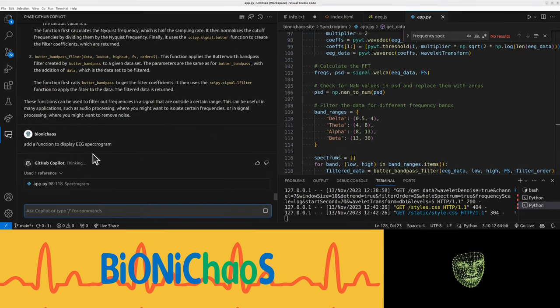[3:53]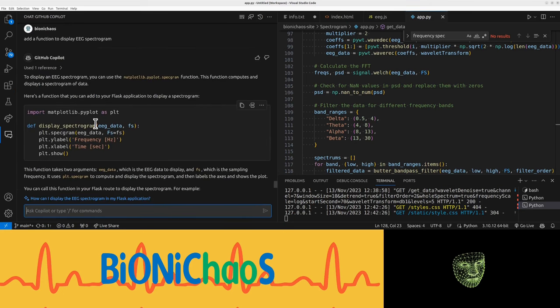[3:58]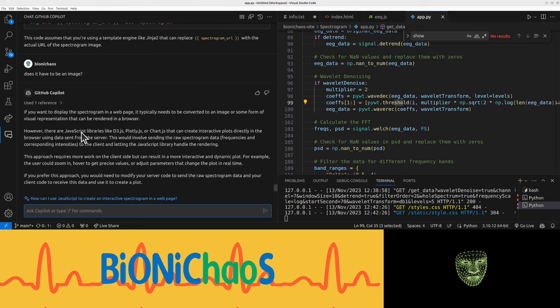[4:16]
It's not an audio file. So we want a function here using the same file. This is the one, and the function to display the spectrogram. Okay, now it's more specific. Do we need the plot show? No, I don't need to show anything in here. I want to show it in the HTML. Does it have to be an image? To display the spectrum in the web page, it needs to be converted into an image. Yeah, how about Plotly? We're already using Plotly.
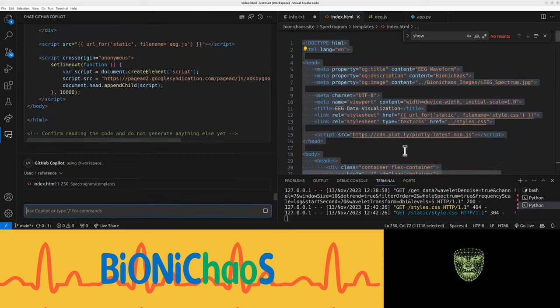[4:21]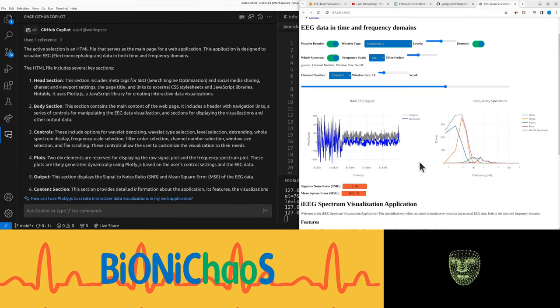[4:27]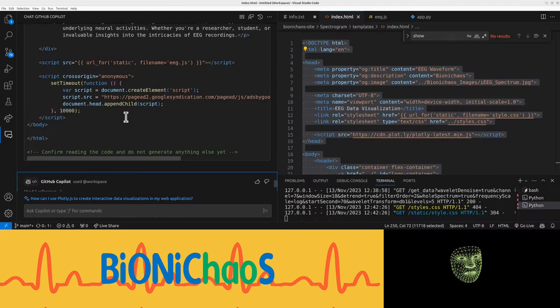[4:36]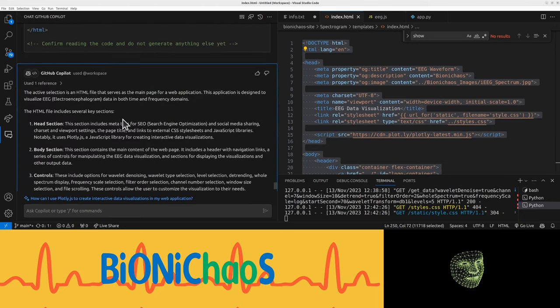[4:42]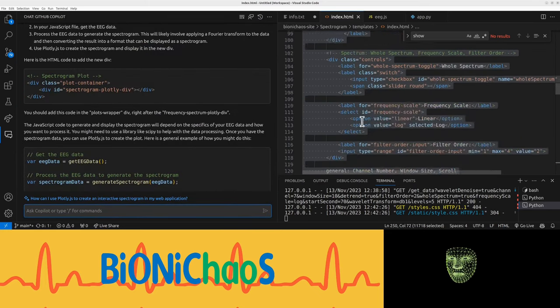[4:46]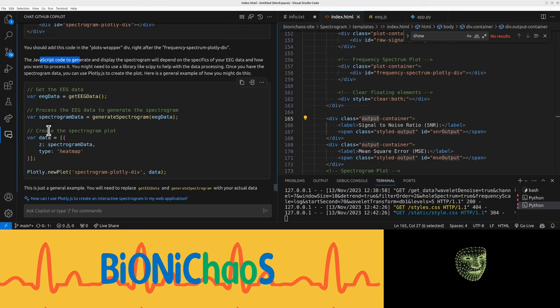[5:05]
Not sure if Copilot is actually reading the files. It's giving me some sort of generic stuff. So what I want to do is have an option to turn this spectrum into a spectrogram. I tried to use GitHub Copilot for it with mixed success. Spectrogram plot controls an output container. Yeah, I can pop it in here. Spectrogram plot, a plots wrapper. Now the JavaScript code to generate and display the spectrogram will depend on the specifics of the EEG data.
Okay. Need to change the Python code first. You would think we don't want it to write a JSON file. So yeah, now it's getting more of the context. I actually had to tell it to explain the files before it started giving something more relevant. It says assume that you have the function to get the EEG data. I'm pretty sure we have it. No, we do not. We have a function called get data.
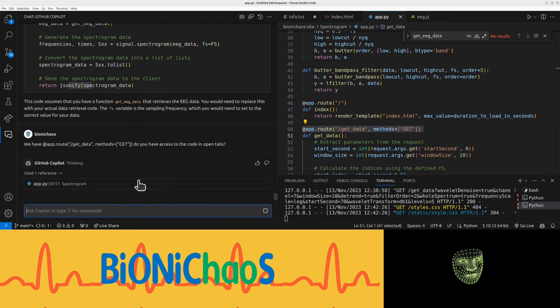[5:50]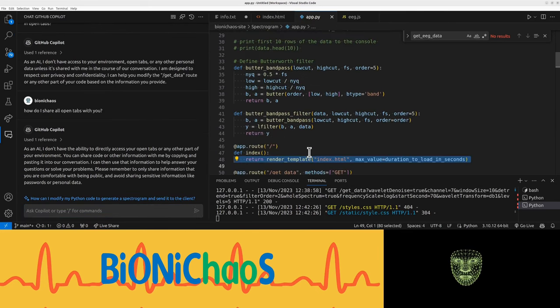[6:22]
Just read the code. Do you have access to the code in open tabs? Get it how it works. Sometimes. Okay, how do I share open tabs with you? Share your information with me by copying and pasting into a conversation. What? So how is it different from just using ChatGPT then? I don't get it. What's the point of copy pasting? Yeah, I should be able to just do stuff in here.
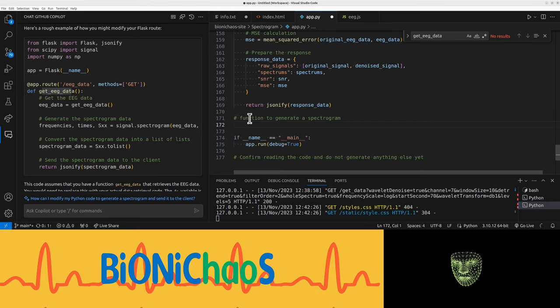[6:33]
Get data. If I do generate a spectrogram, it's suggesting two options. So should it be a get, returning 400 just in case of error? What? We're already doing this. It's not being accessed. Yeah, you can just add it in here. So it's returned. Do we want to replace it or return both of them? I think we'll run out of time. We'll continue in a bit. See you soon.
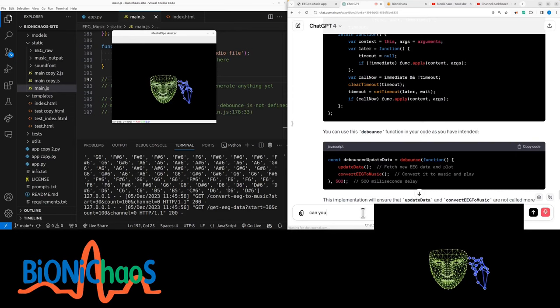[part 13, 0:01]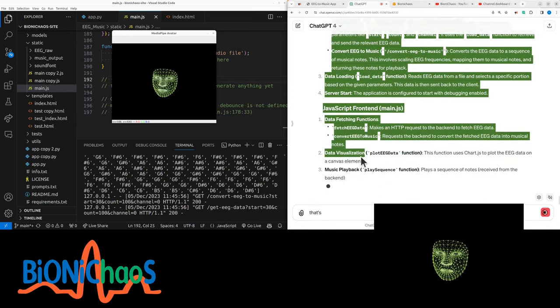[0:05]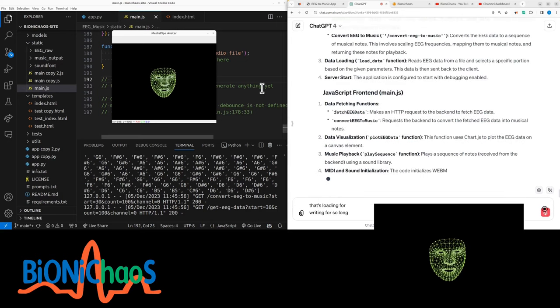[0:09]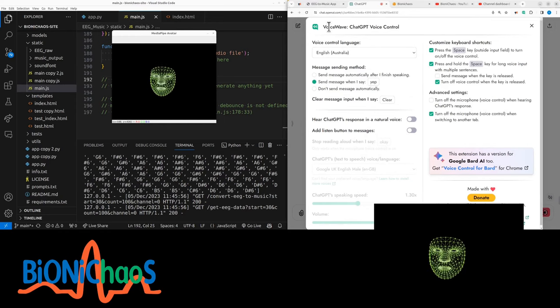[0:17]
Can you write an overview of the whole code? That's loading for writing for so long? ChatGPT became slower. Much slower. Yeah, I'm using this voice wave ChatGPT voice control thing.
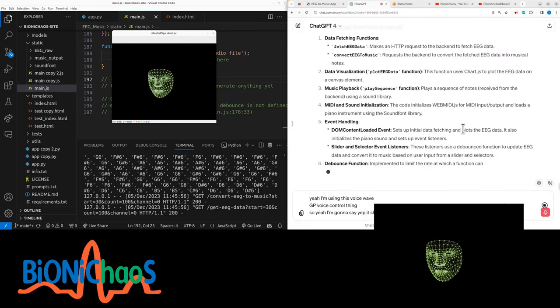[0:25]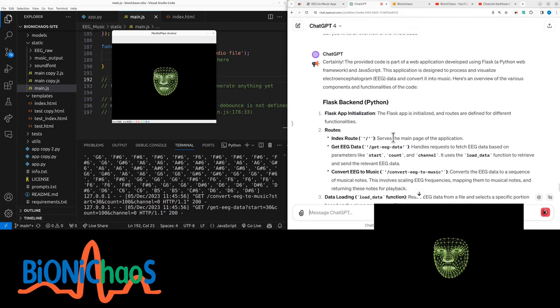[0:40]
So when I say yep, it should send a message. When I say clear, it should clear the text window. Clear. And it actually works most of the time, if I speak properly into the microphone. Clear. Okay, now it doesn't. Clear. Okay, this is still generating forever.
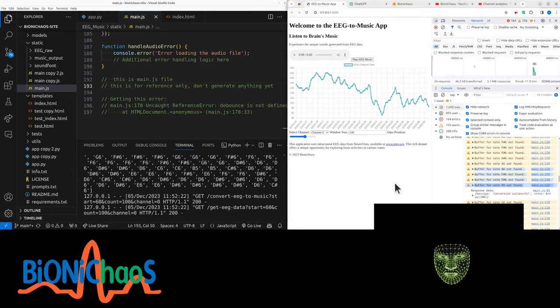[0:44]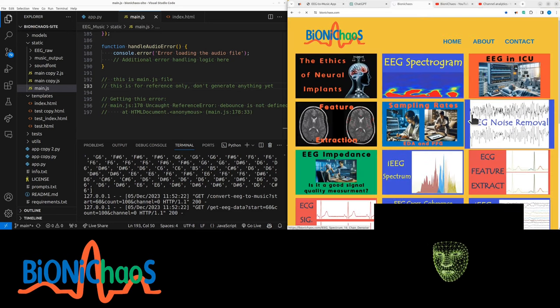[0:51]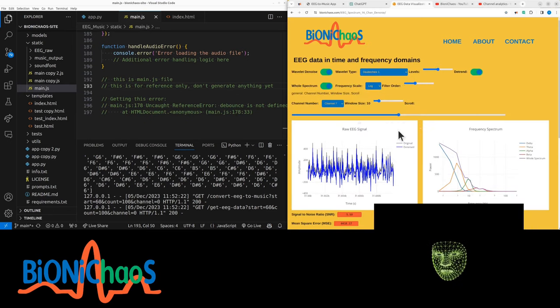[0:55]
So that's what the application currently looks like. It's loading some EEG data from file. You can check it out in EEG noise removal or spectrogram on the page. This is the same data. It has a seizure in it. That's the quiet after the storm, after the seizure. You can scroll through it in the EEG.
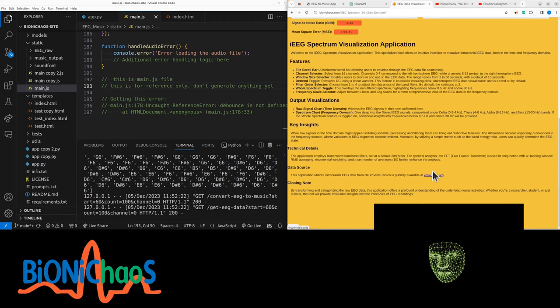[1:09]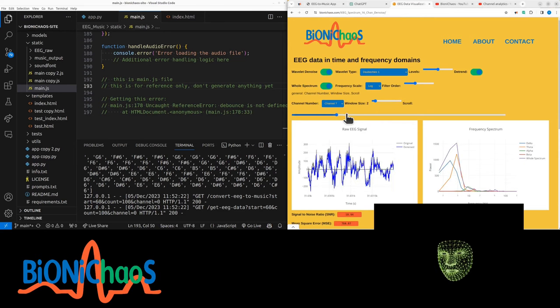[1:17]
It's on iEEG.org. I think anyone can download it. I think it just requires a basic registration. This particular data set has seizures in it. That's what they look like. It's real EEG. I know sometimes things like this look a bit fake-ish, but no, those are seizure spikes. You can check them in here and try to reduce noise in it, which this tool does using wavelet transforms.
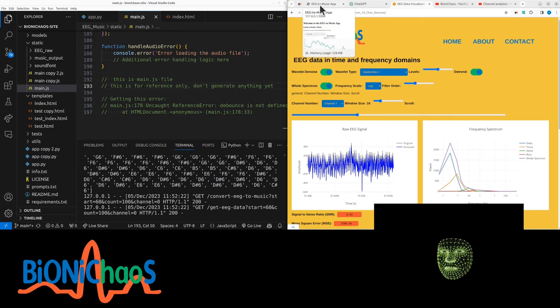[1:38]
But now we're trying to turn this into music for various reasons. One possible use case is being able to review EEG just by listening to it, and you don't want to be listening to sinusoids because it's annoying, noisy. It will just sound like noise, so you might as well turn it into music. Or, when I say music, it might not be perceived as music, but instead of sinusoids, it's actually using musical notes. So notes like this, just for testing.
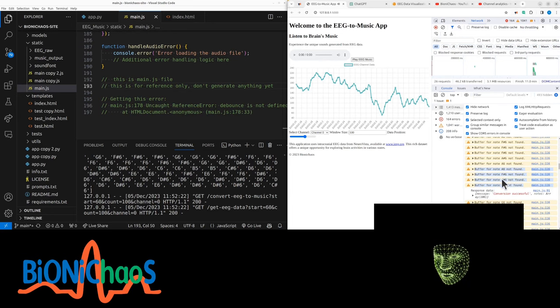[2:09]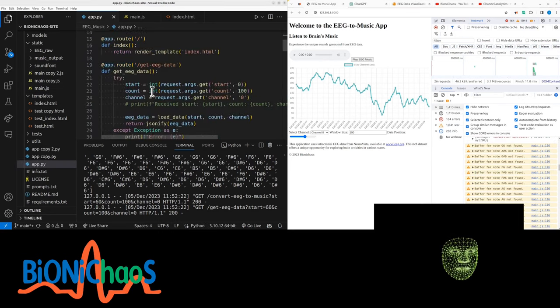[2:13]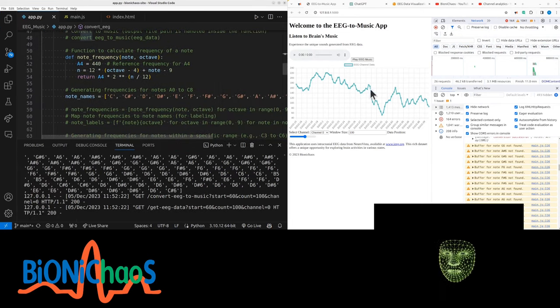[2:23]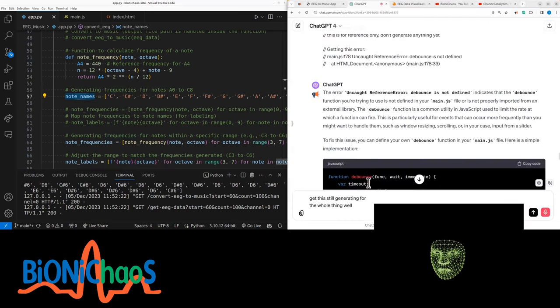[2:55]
So actual F sharp 6 or G6. This code, which GPT-4 generated for us, will do a conversion using an interpolation. That's the general idea. I'm getting all sorts of errors with it, mainly to do with the fact that the frequency components cannot be directly translated into a musical note, because it will be essentially outside the range of a typical piano, for example. Now here we're using a grand piano. So that interpolation does work, but generating this, the algorithm cannot find these particular notes. I'm not sure if it's because they're not defined here.
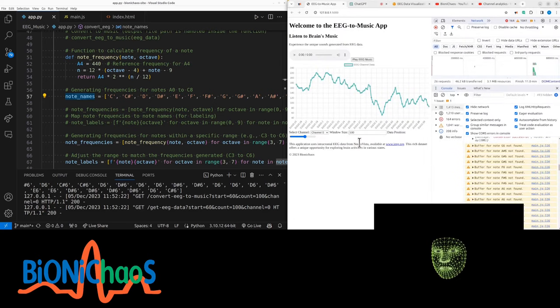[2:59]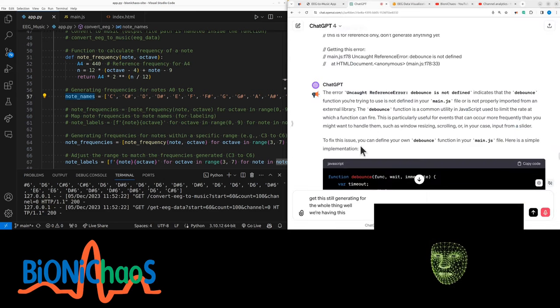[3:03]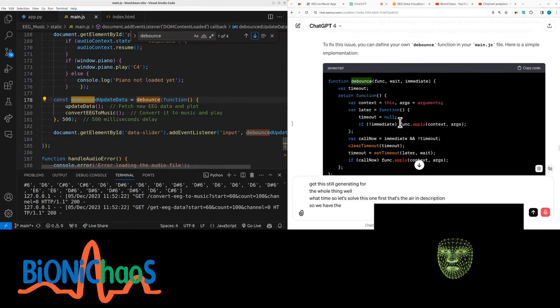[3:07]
We're having this other error as well, which is meant to prevent us sending the same thing multiple times. So let's solve this one first. That's the error description. Actually, we don't have the function. Clear, clear. This doesn't work. Clear. Right, it did work. Yeah, it's hit and miss. It must be my pronunciation that the bot is not picking up.
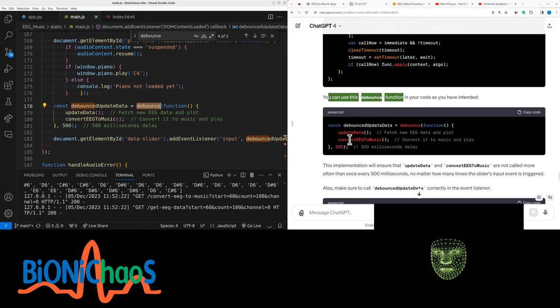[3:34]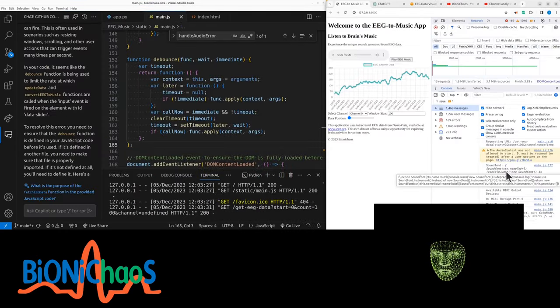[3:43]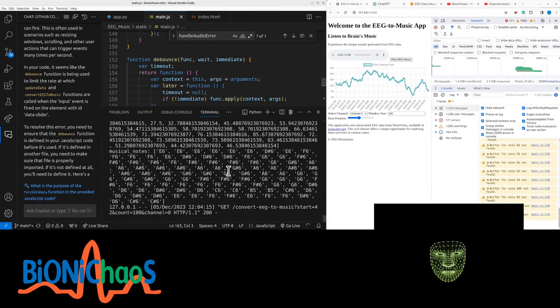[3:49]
So are we trying to define our own debounce function? Don't we have a debounce available somewhere already? And in the use of the function, we have debounce update data, convert to music, with a 500 millisecond delay. That looks good. Also data slider. Okay, that error is gone. Okay, I'm still getting the buffer note, so the notes would not play.
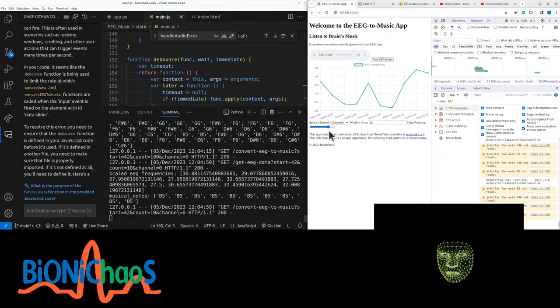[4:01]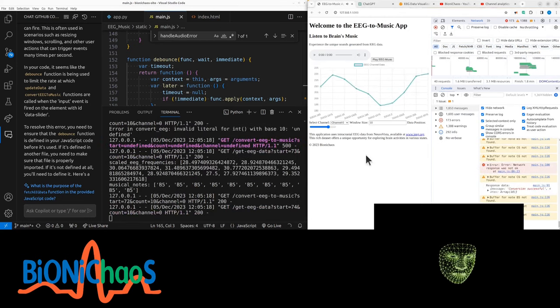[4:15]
So the idea is that this real EEG will be translated into musical notes. Let's reduce the window size for a sec. As you scroll through the EEG file, it will convert it to, well, music. I'm not saying it will sound like music, but it will be converted to actual musical notes using a font called grand piano. So it will be converted into something like this. But we're having all these errors coming through.
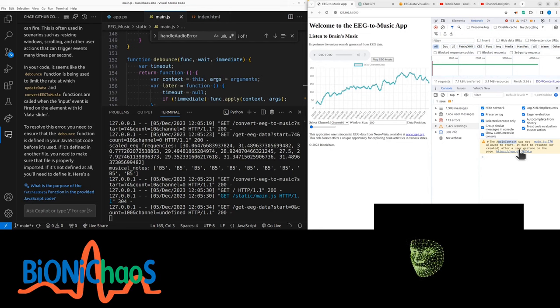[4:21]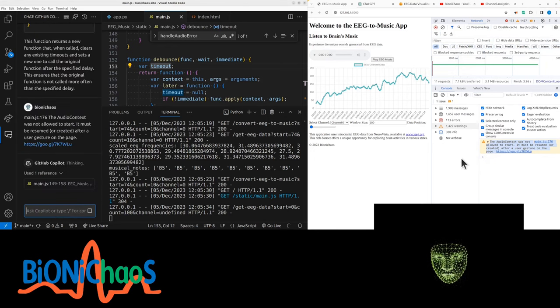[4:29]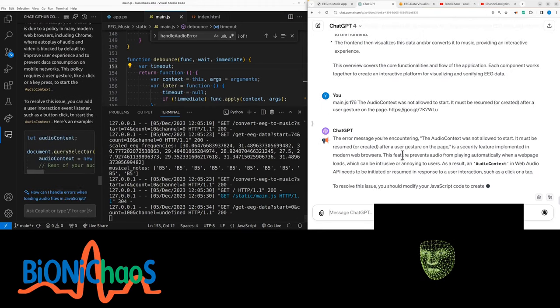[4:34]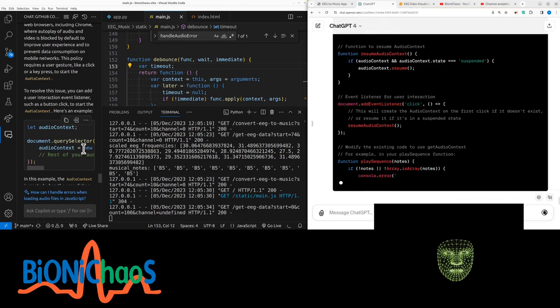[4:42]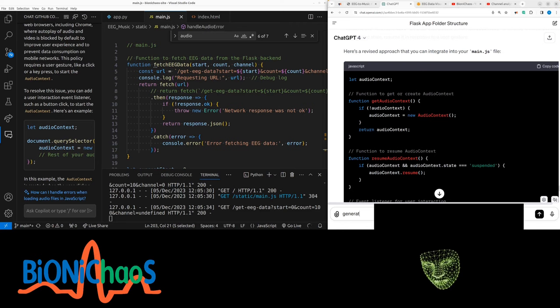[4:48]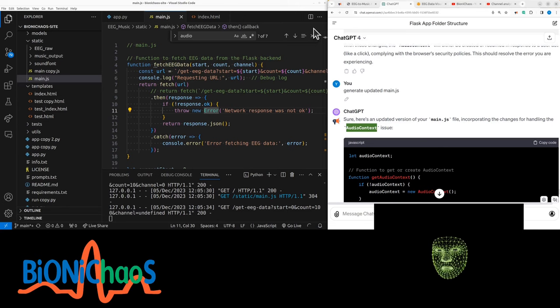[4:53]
Audio context was not allowed to start. I'll try to resolve it using both GitHub Copilot and ChatGPT, GPT-4. Modern browsers, security. Yeah, I like how GitHub Copilot already gives a resolution. GPT-4 does the same and more. So some sort of browser feature. Generate updated, was it main.js? Yeah, we need to handle an audio context, because I'm getting this warning that the audio context is not allowed to start.
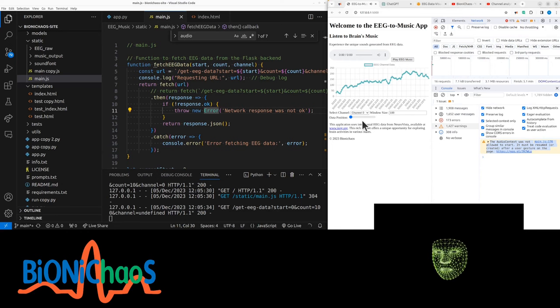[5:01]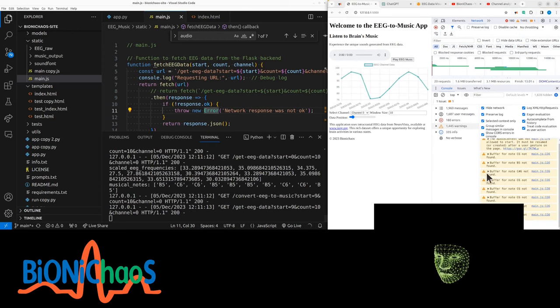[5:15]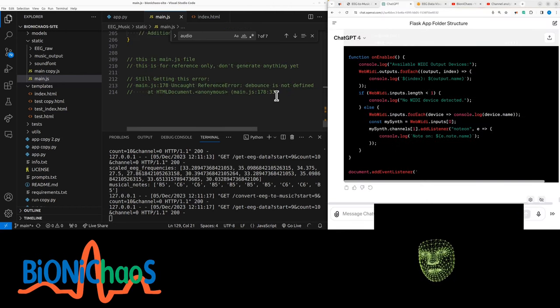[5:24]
Unless there is an interaction with the page. Let's make the window size smaller again. Try this again. The main problem is that we can't hear those notes. That's obviously because of this comment here. The buffer for note is not found. Yes, I thought we're not using the web MIDI anymore because that was generating a file.
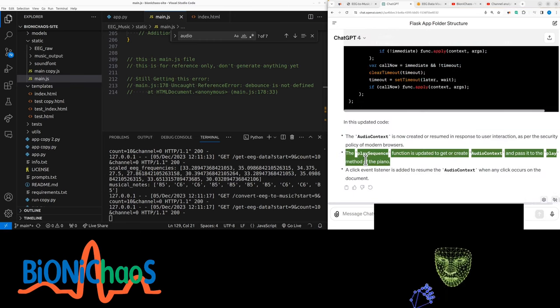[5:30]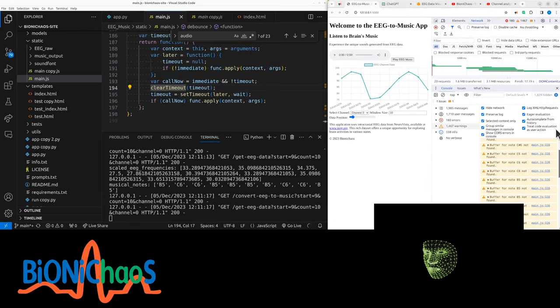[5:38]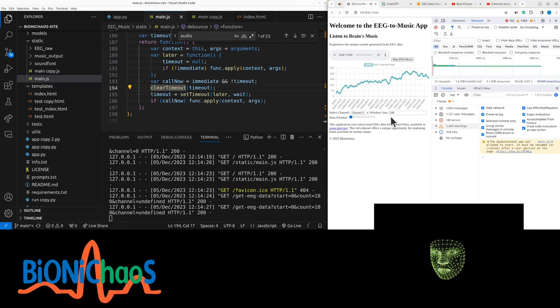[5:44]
Right, so it sounds like we won't be able to bypass security of modern browsers, and we don't want to anyway, so we'll have to implement this. This at least should get rid of this audio context warning. So music is still running. Let's reduce the window size. This should already play some notes.
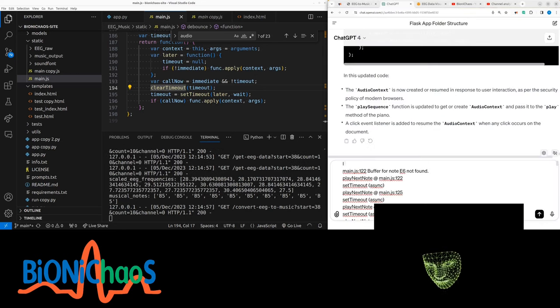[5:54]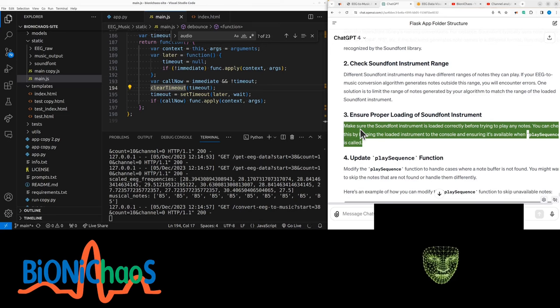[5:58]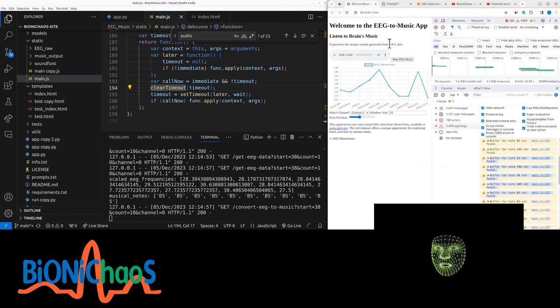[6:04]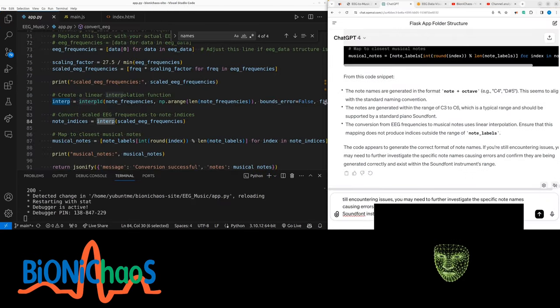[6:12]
It's not doing it. I can't hear anything and get the following. Yes, it's grand piano. Well, that's why it's called grand piano. It should have a wider range of notes. I'm pretty sure it's working okay because we have this button for testing that is actually playing sound. Yeah, we need some troubleshooting.
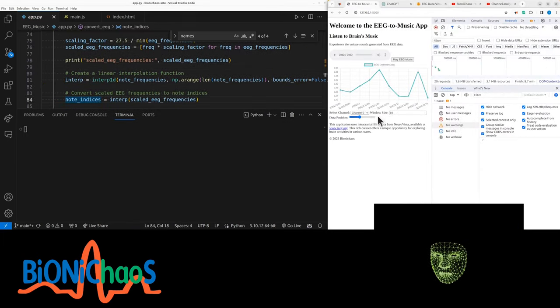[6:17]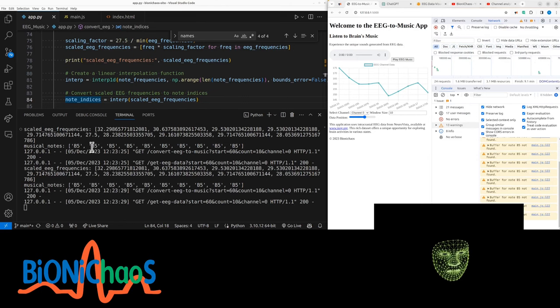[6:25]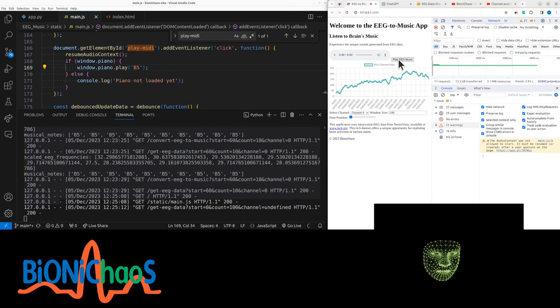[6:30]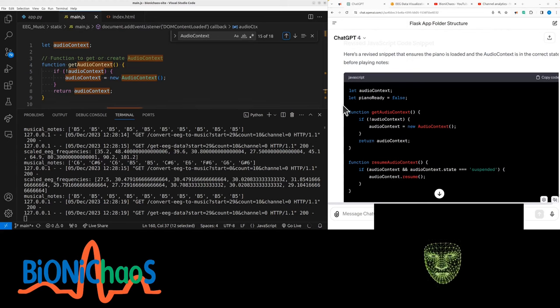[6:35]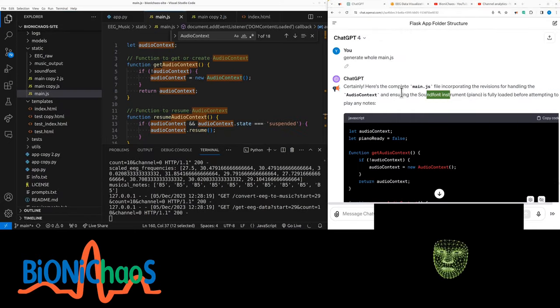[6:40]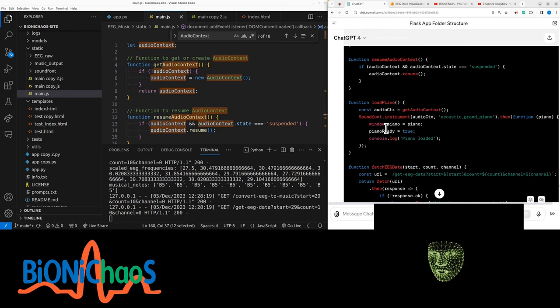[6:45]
So it's doing a 1D linear interpolation. We have a window size of 10, selecting another region of the EEG. The notes are B5, generated twice. It's playing okay. This audio context is not being used correctly. You regenerate the whole JS. Yes, this is the updated JavaScript, loading piano, loading this grand piano. So it should have all the keys. That error that we were getting should go away.
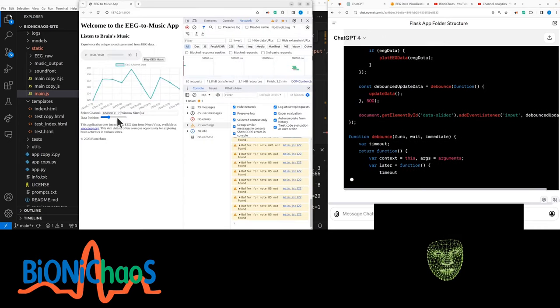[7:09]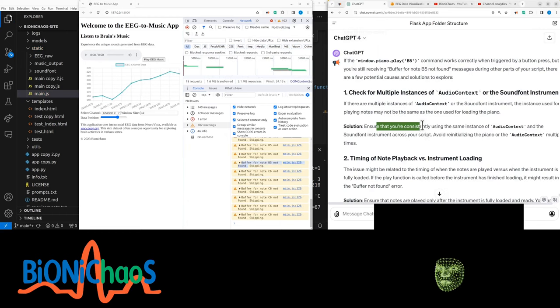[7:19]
Yeah, fetching EEG, updating the data. This is happening when you're scrolling, plotting the data, converting to music. It's using another function. This should be legit. Yeah, the debounce function should prevent the user from clicking too many times. We know the piano is working, the EEG is working, it's loading okay, but we're still having this issue with the buffer not found. Avoid reinitializing the piano or the audio context multiple times.
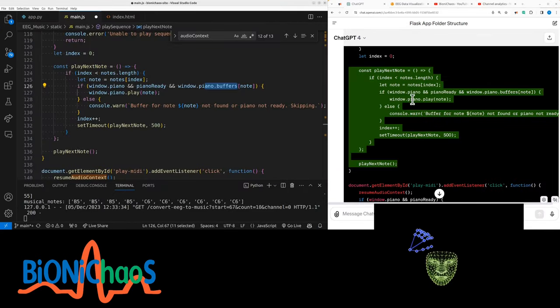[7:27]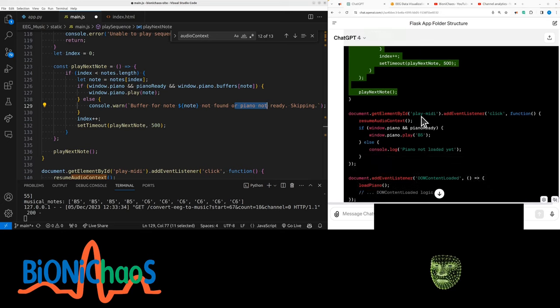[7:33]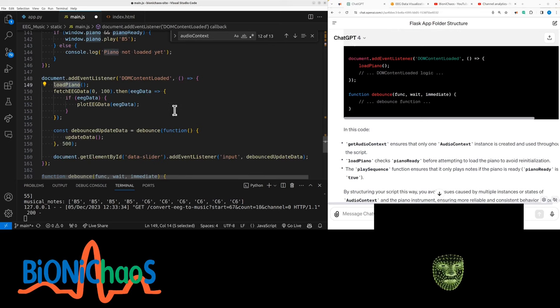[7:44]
Okay, how do I actually do that? Edit this if condition, window piano buffers note. Okay, so that message is actually coming from the code, so that's good to know. Play next note, document get element by ID, this should be the same. Document event listener loaded, load piano, debounce. Nope, still skipping, and the piano is still working with B5.
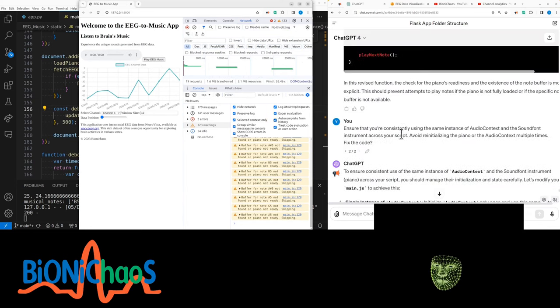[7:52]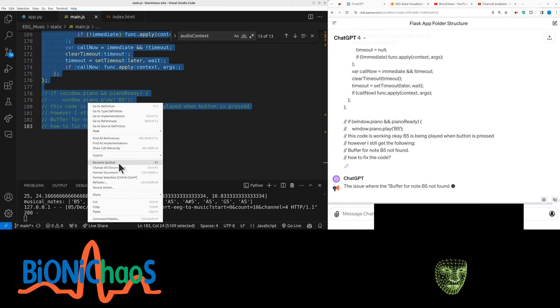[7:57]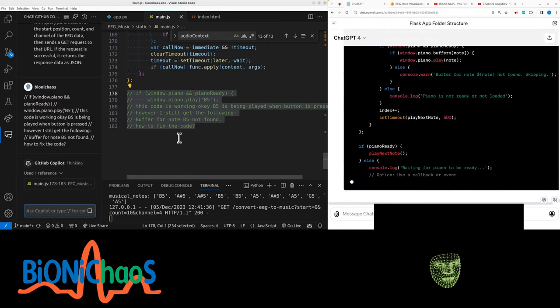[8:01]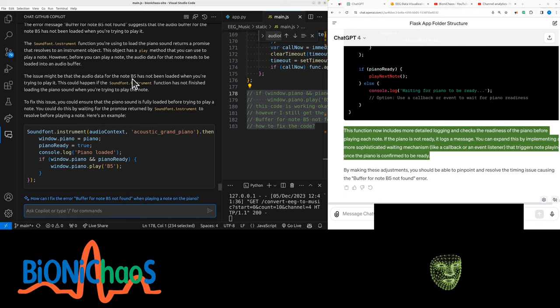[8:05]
I need that prompt, that's a comment. I'll try Copilot as well. So, doing explain this so it has access to that prompt in Copilot as well. The issue might be that the audio data for the note B5 has not been loaded when you are trying to play it. It's not finished loading. Could ensure that the piano sound is fully loaded before trying to play the note.
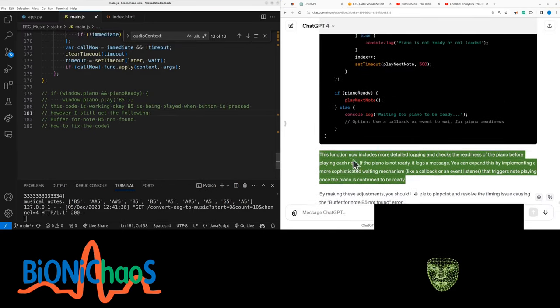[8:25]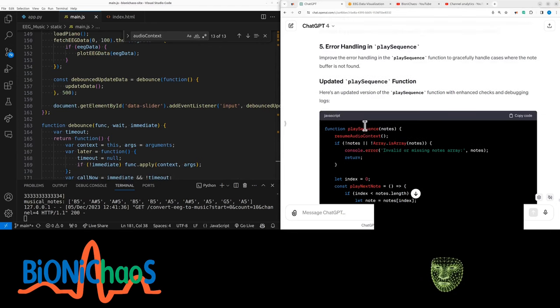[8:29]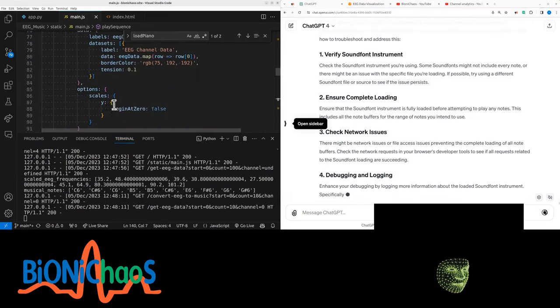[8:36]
But that code is actually working. That's what I said, didn't I? Window piano play B5 is working okay. Yeah, GitHub Copilot doesn't have the context. GPT-4 is not giving an answer, but at least it understands what I'm trying to do. Yeah, let's do some more troubleshooting. I'm going in circles.
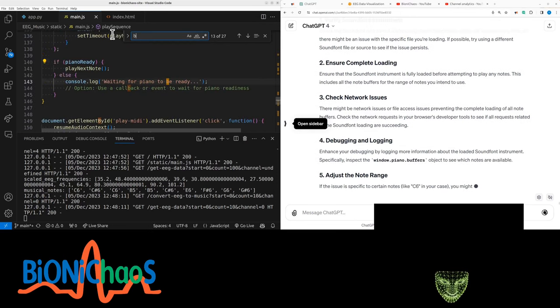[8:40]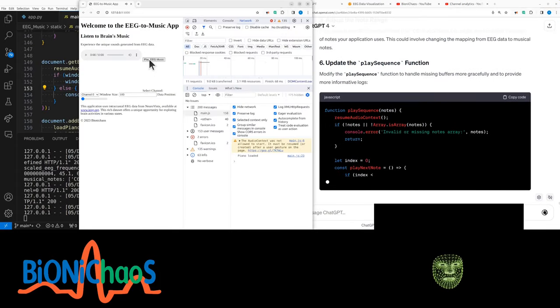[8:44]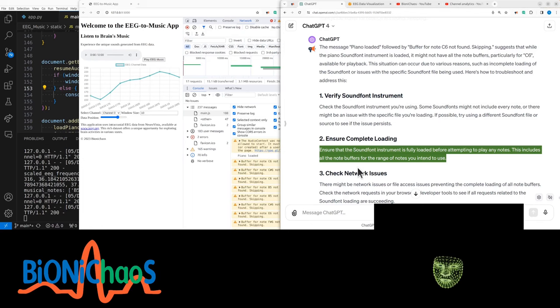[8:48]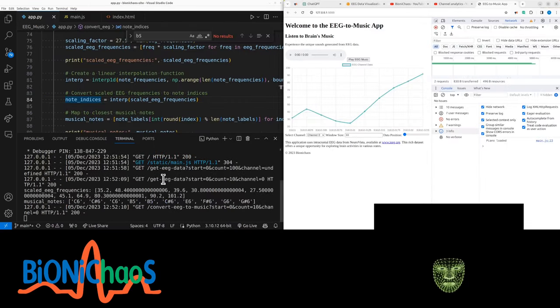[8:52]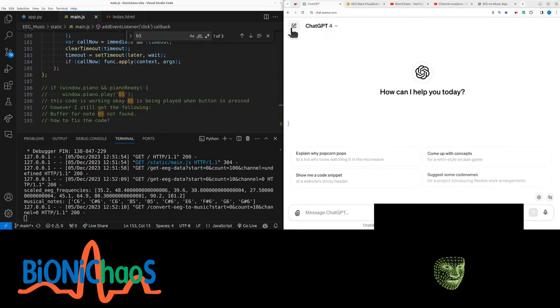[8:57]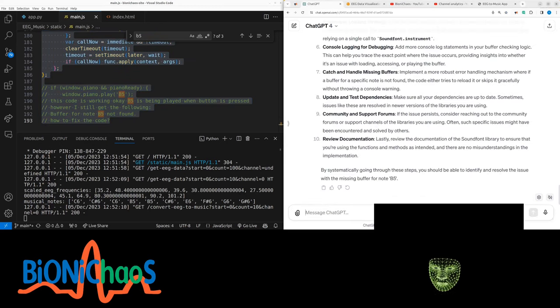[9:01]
Obviously, it does have C6. So now we're doing B5. Let's do C6. Piano loaded. Now the sound font is okay. Loading is okay. To restructure this code, it should be playing these tones. Yeah, let's start a new chat quickly. We have the prompt at the bottom as well. I'll just continue. Yeah, other notes work okay.
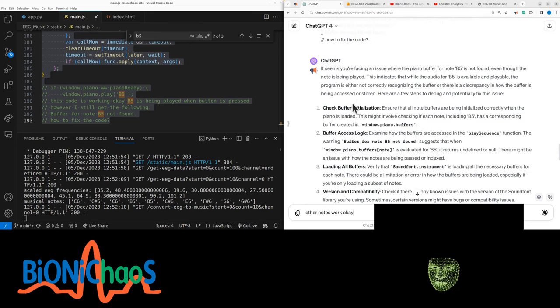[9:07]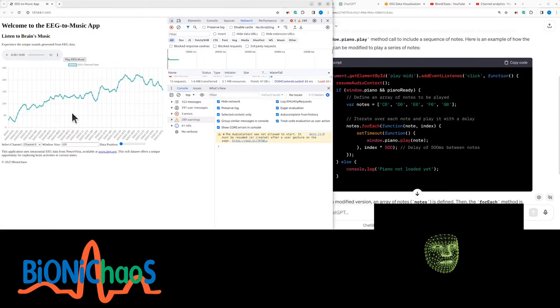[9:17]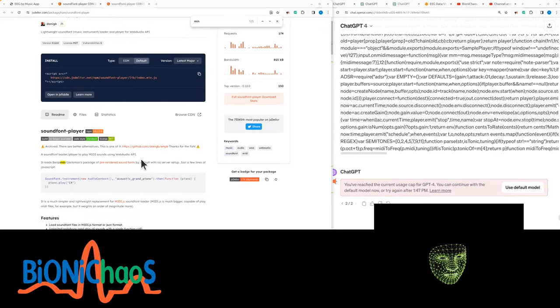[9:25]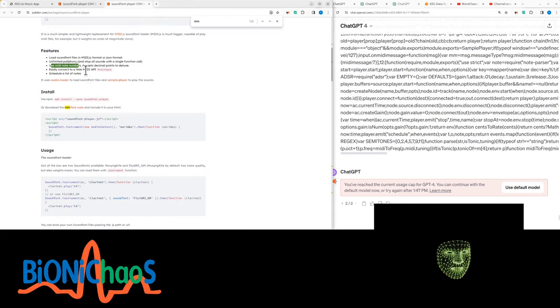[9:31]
And then continue with debugging. Yeah, that's probably the best advice. Probably gonna get penalized for long prompts. Probably gonna get a timeout. Yeah, there seems to be an issue of how we are using this JavaScript for playing sounds. Trying to understand the difference between the main JS and the regular JS. So it is using MIDI note numbers.
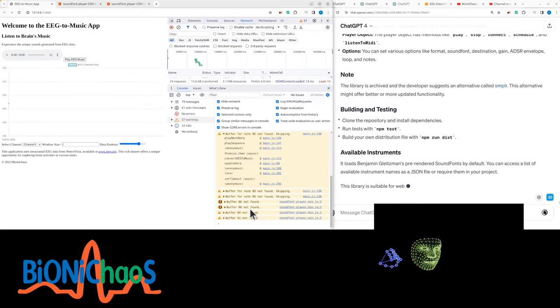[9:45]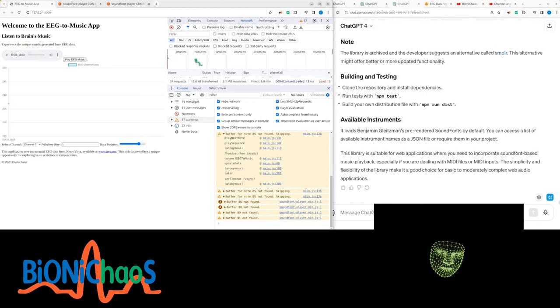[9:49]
Okay, we also got a timeout from GPT-4, as expected. There's no option to regenerate though. You can install Sound Font Player via NPM or include it directly in your HTML. Loading an instrument, JavaScript, copy code, Soundfont instrument, AC, clavinet, then function, clavinet.
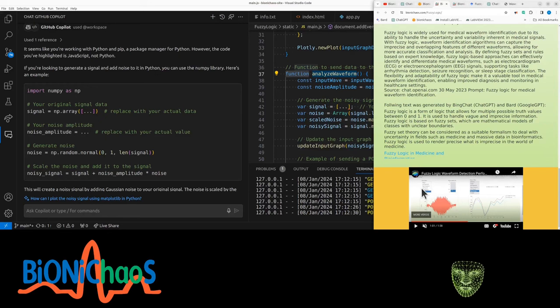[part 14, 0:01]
It's basically selecting a shape of a signal, adding noise to it, and there's a detection algorithm, in this case a fuzzy logic algorithm, that is used to detect the original signal. And obviously with increased noise it becomes harder to detect the signal. Currently we are replicating this in Python.
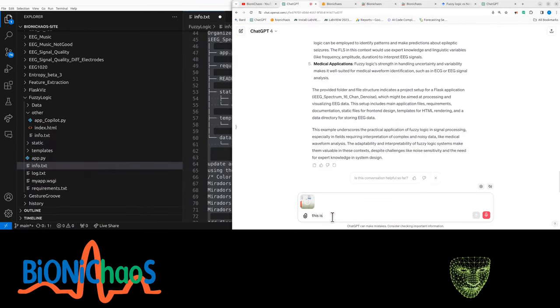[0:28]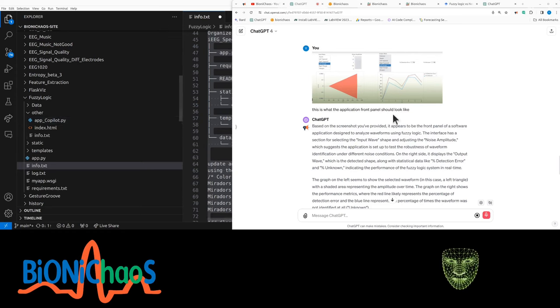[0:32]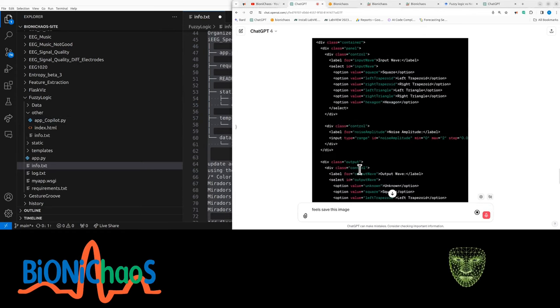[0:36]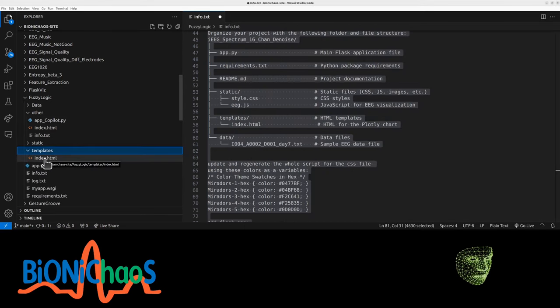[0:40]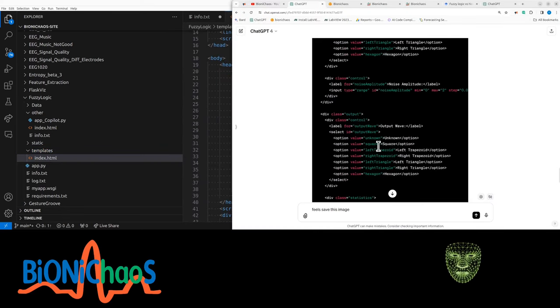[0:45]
This is what the application front panel should look like. We also saved this image. The drop downs as expected. Then we have the actual HTML in the template folder.
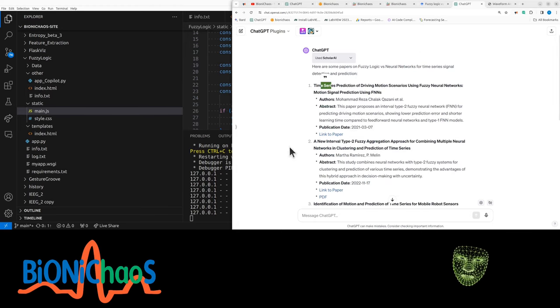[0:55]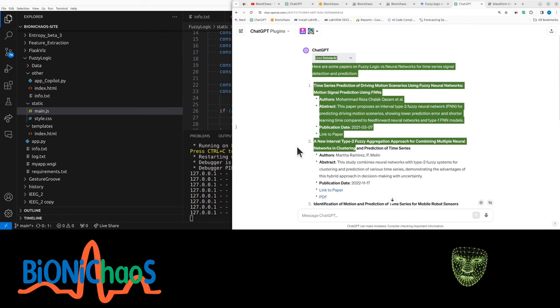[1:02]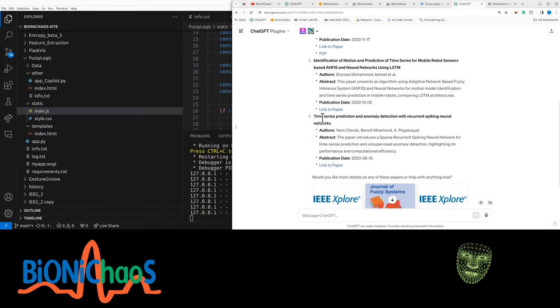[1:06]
Some papers that the ChatGPT plugin, this plugin called Scholar AI, found: time series prediction of driving motion scenarios using interval type 2 fuzzy aggregation approach combining multiple neural networks, clustering prediction, time series. Yeah, it's a lot of robotics, time series prediction, and anomaly detection with recurrent spiking networks. I don't know about that.
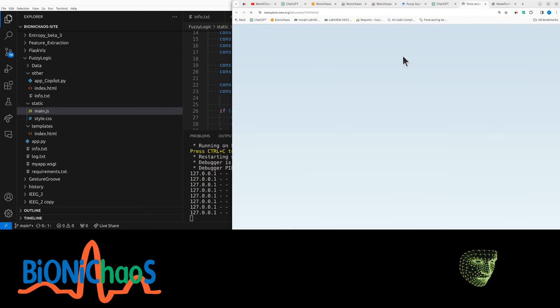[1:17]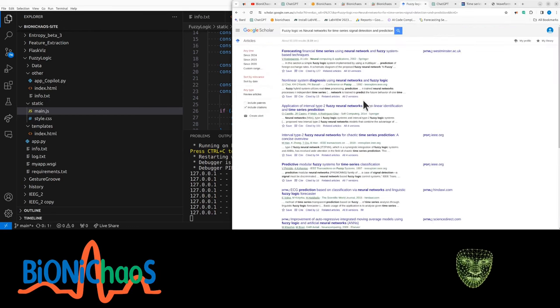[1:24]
Let's check if these links are legit at all. IEEE.org is a legit website. It's a legit conference. Great, this is what Google Scholar gave. Yeah, obviously, forecasting financial time series.
It's not quite the topic of my YouTube channel. I'm sure this will get a lot of views. Yeah, I'm interested in how they did the comparison between the two. How do they even measure performance? We can do it with past data. Currently, we're just sticking to prediction quickly.
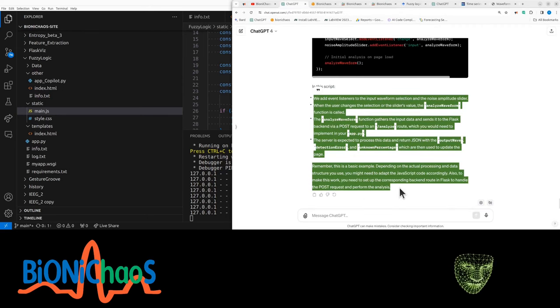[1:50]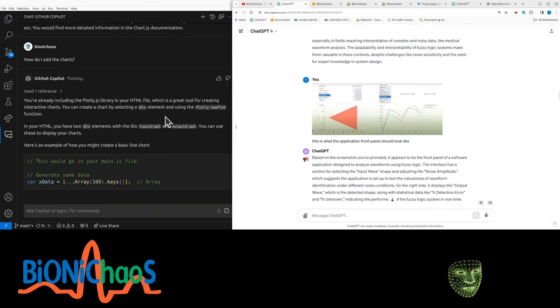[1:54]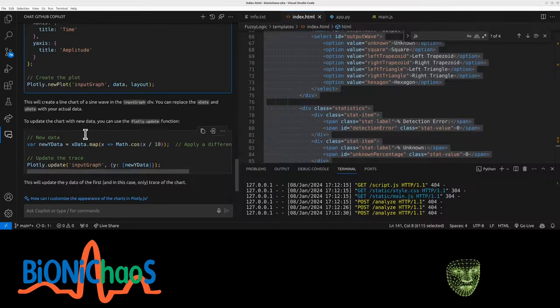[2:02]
I have some template for the JavaScript. It's a bunch of errors. So we're already including Plotly. Yes, it is a great tool, thank you. Input graph, output graph. That's right. So there are two of them. So we need to make sure they actually... The noise amplitude is important.
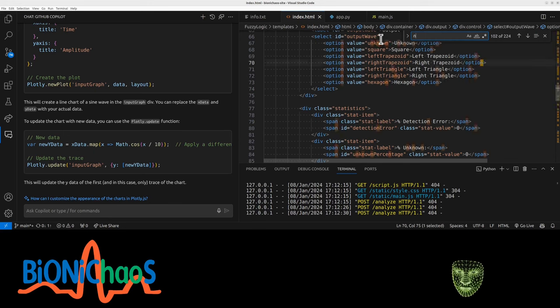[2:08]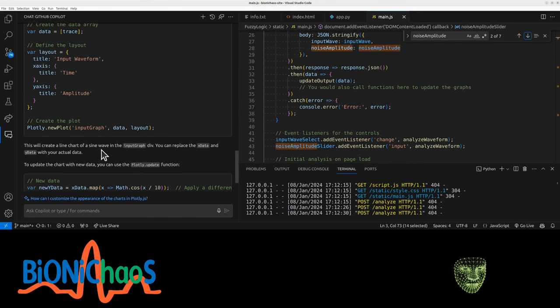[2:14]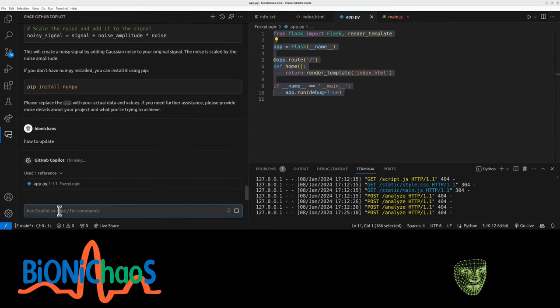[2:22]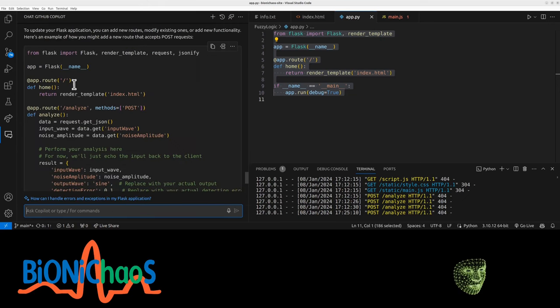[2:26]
It's the noise. So JavaScript should take this noise amplitude and generate a waveform out of it. It should have a basic shape based on the input wave. We're still kind of in a template stage. Yes, we are doing a Flask application. We have an index.html. Have a method that will be called using a POST HTTP request called analyze, and it will give you the result.
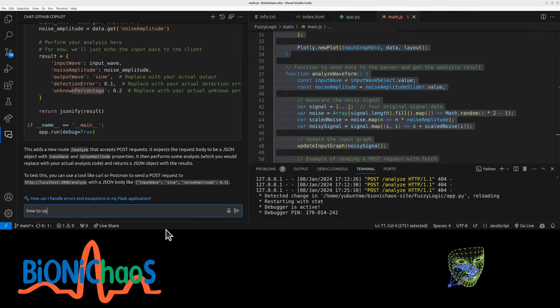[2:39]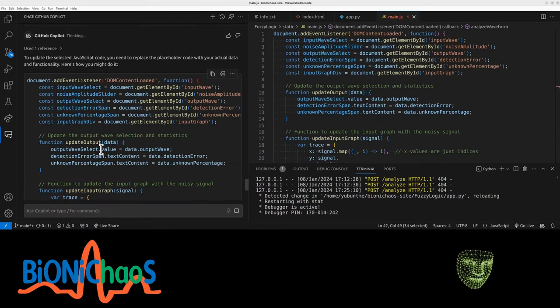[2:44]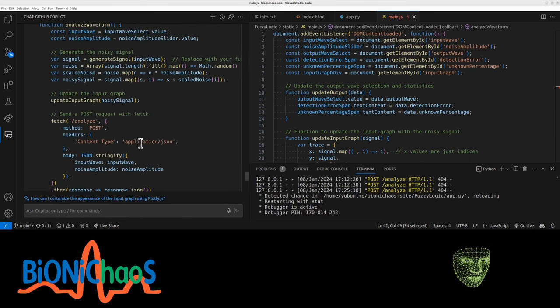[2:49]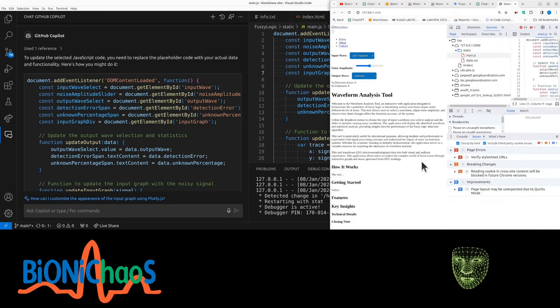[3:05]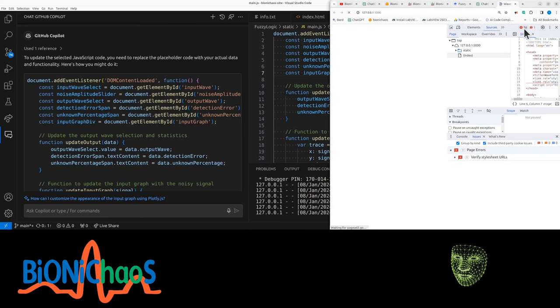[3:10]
We should have the data actually coming from the backend, from Python, getting elements from the HTML, data output wave signal. Well, what we currently have doesn't work, so we might as well replace it. The error went away. This, by the way, not the EEG, this will be more basic stuff. Let's check the... Don't tell me we have 56 errors. This will be like a fake EEG. It's still time series data.
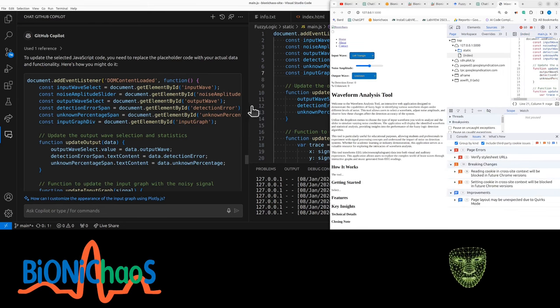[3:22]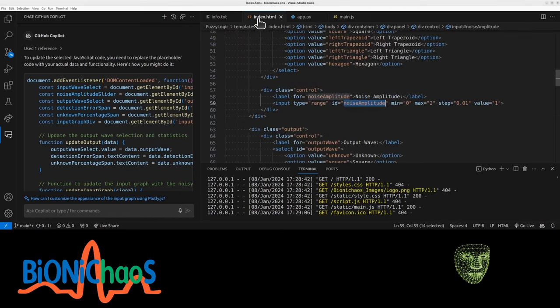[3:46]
It's loading forever. I mean, later we can add the other shapes to it as well that might be more EEG relevant, like a spike. Can have an envelope of a spike or slow wave EEG. And this particular tool is using fuzzy logic to try and detect this signal. Currently, all right, we have to update this HTML because we actually need the charts in it.
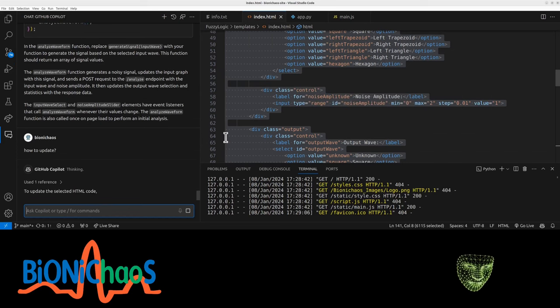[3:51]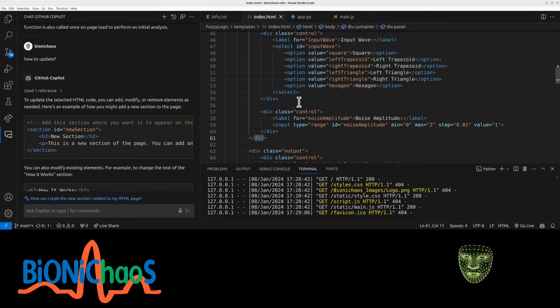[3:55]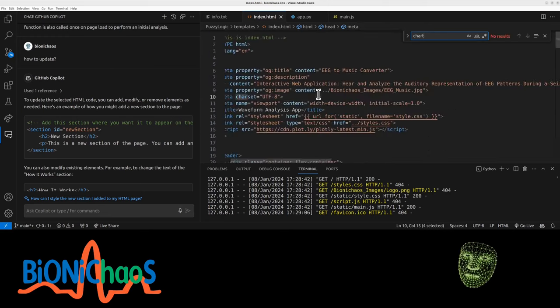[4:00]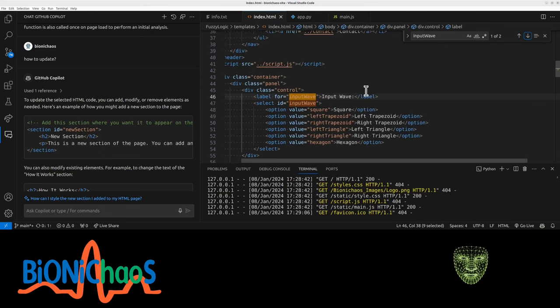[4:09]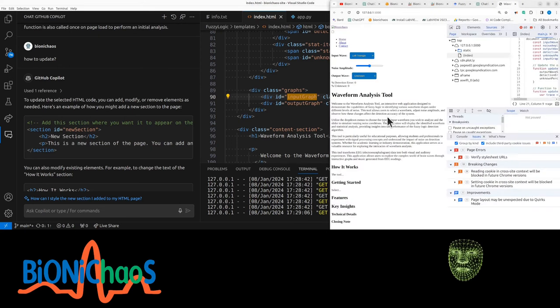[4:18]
We're actually using GitHub Copilot, which is meant to be GPT-4. Okay, no, I meant with the charts. We need the charts visible. We have charts, and no, it's the ID output wave, input wave. No, the input wave is already there. That's the drop-down menu. We actually need the chart as well. So we do have input graph and output graph, but we don't see them.
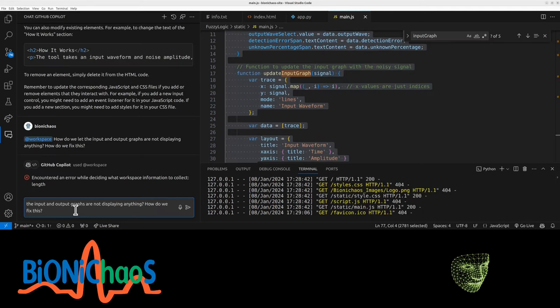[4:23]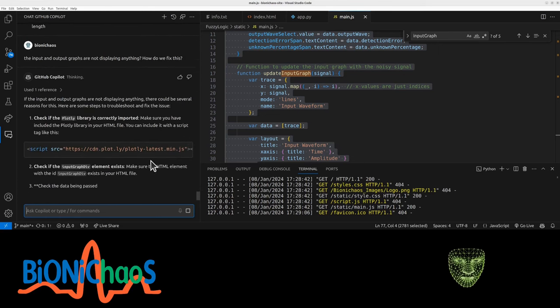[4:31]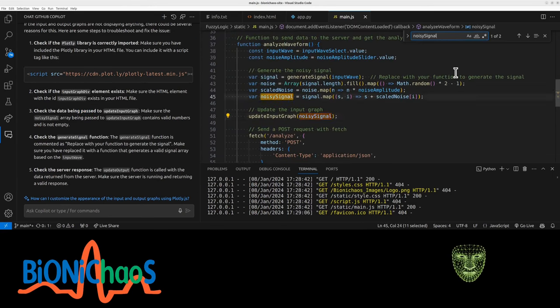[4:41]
Where are they? The input and output graphs are not displaying anything. How do we fix that? Plotly library is correctly imported. Yeah, Plotly library is loading forever. Don't know why. Check if the data is there. I suspect there's no data. Check noisy signal. Update input graph. Log noisy signal to console.
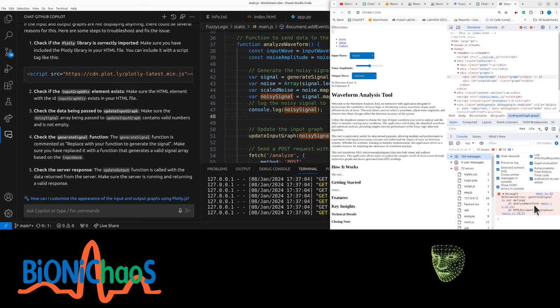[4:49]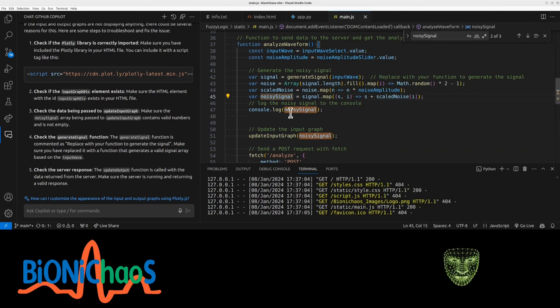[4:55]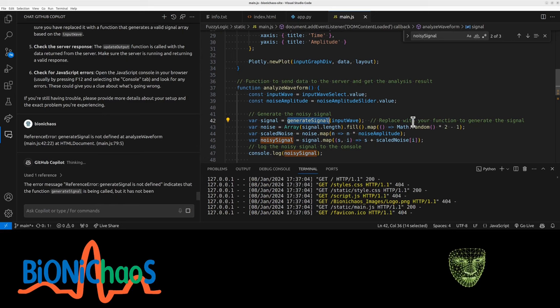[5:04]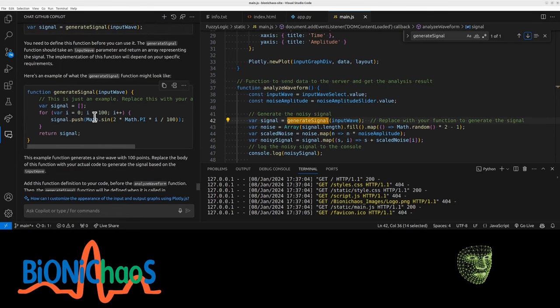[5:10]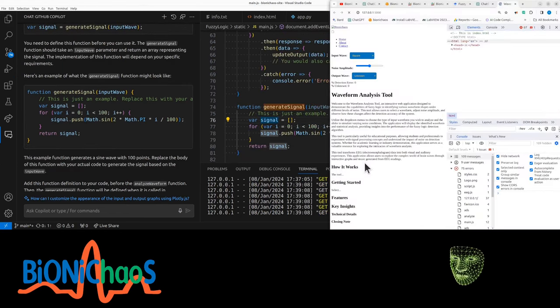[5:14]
Generate signal is not defined. Never understand this main JS. Which one is it? I'm not having that labeled by the linter. It's a template, isn't it? Need to replace this. Yeah, this should be a function. It's all templates so far. That error should go away.
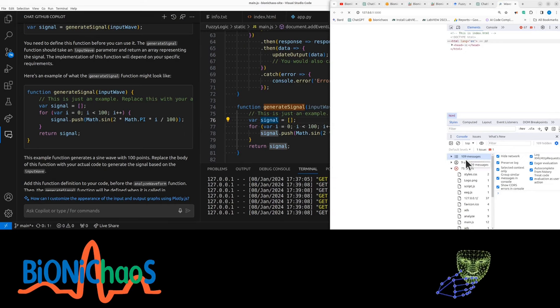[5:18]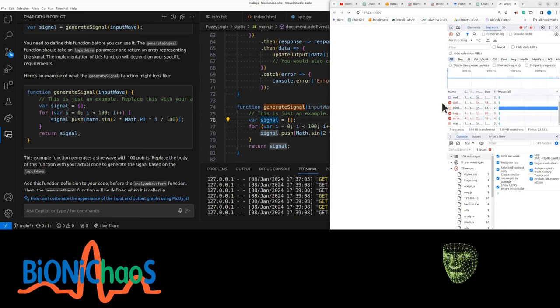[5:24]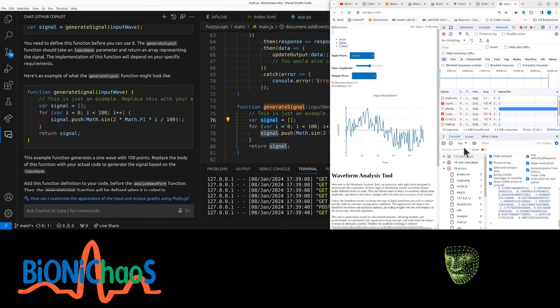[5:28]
Okay, there's something wrong with the loading time. Where's the network? No, those errors are actually okay. Yeah, it's loading the Plotly. So we do have the data. Looks like it's overlaid on top of a sinusoid. Yeah, we can add noise, just great.
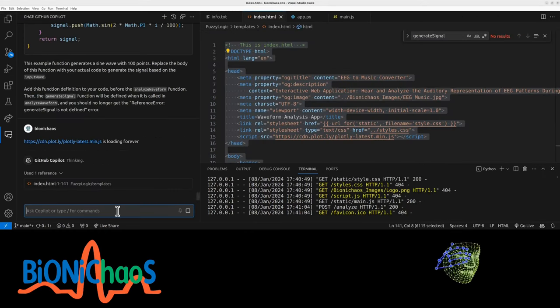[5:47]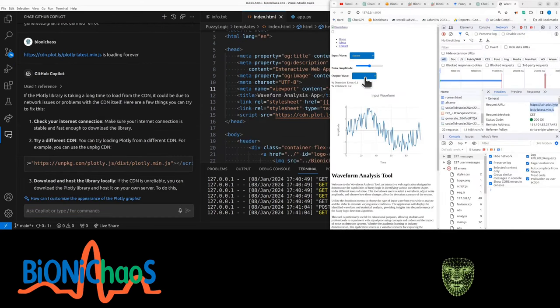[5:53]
And the output is not doing anything because we don't have that functionality yet. This CDN seems to be loading forever. Well, eventually it's loading, but it's way too long, and it's meant to be a mini version of it as well. The other problem is obviously the output.
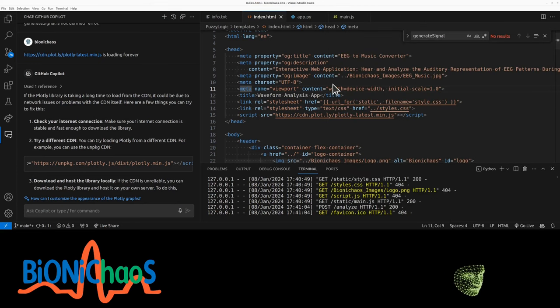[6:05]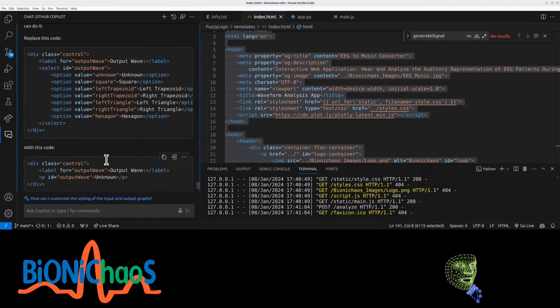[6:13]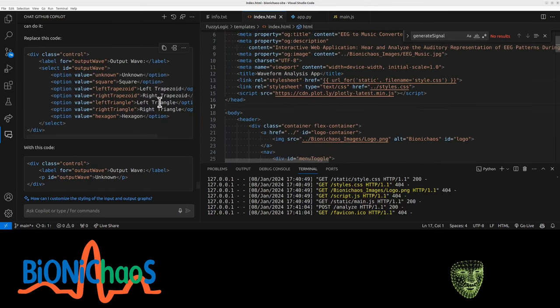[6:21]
Yeah, the output shouldn't be a selection. It definitely shouldn't be a drop-down menu. It should be an output, right? So let's change that. I mean, it could be an input only if we are training, but we are not training at the moment. Should we change it?
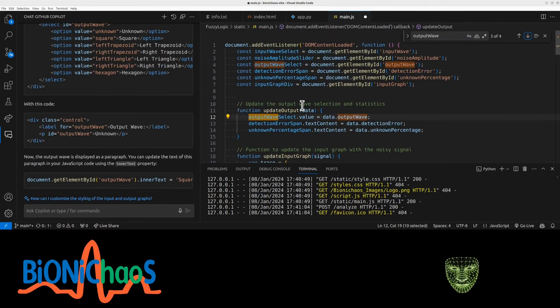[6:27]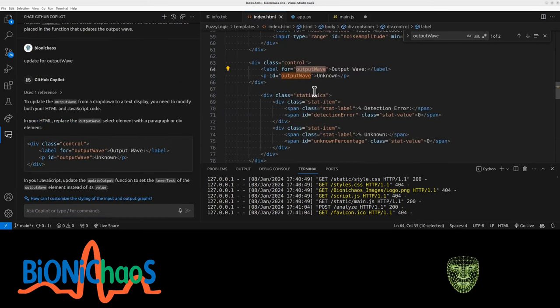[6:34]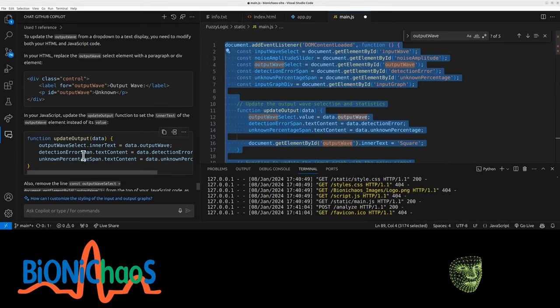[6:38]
Yes. Label for output. Yeah, output data is not updated. We need to update for output wave. So in HTML, we have that, okay. And in JavaScript, update output data. It won't work, but okay, because we don't actually have the output data.
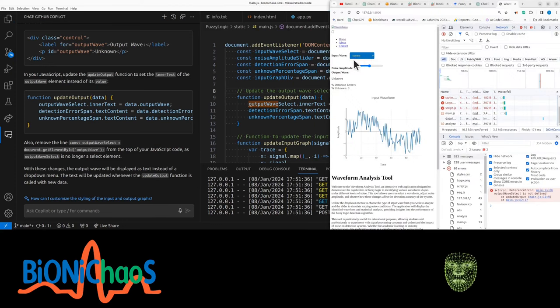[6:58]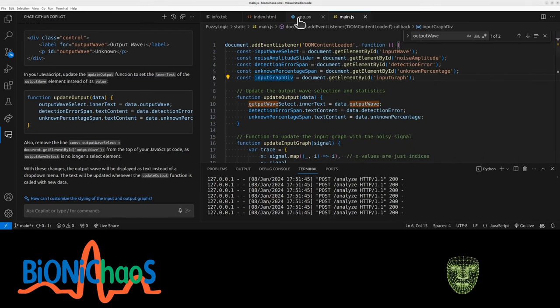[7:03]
We also don't need this constant. So the output should be displayed as text. That won't work, would it? Output wave. Okay, we actually need the input waves to work properly. Are we generating the functions in Python code or JavaScript? It's okay to generate them in JavaScript. I want to do as much as possible on the front end so my server is not overloaded.
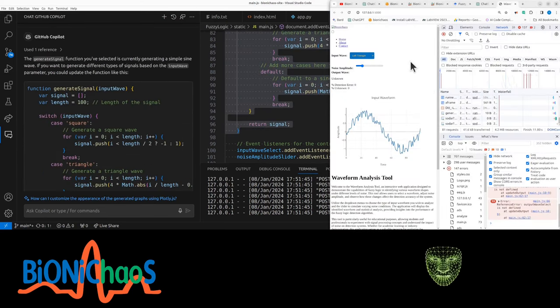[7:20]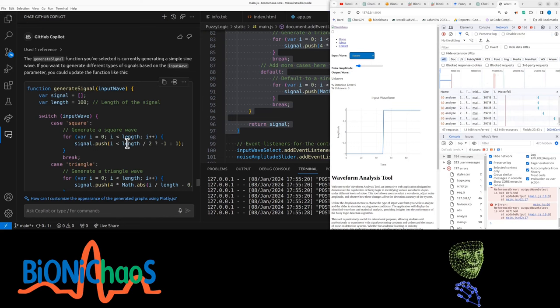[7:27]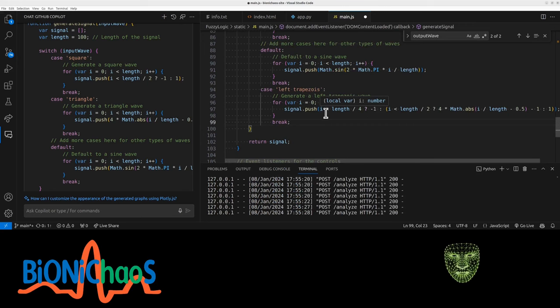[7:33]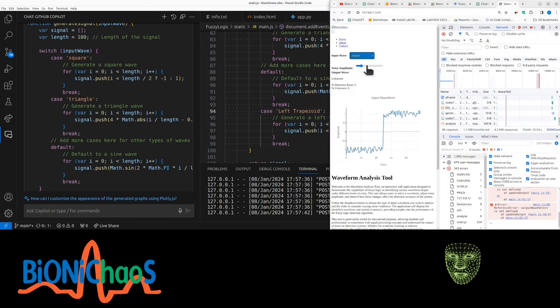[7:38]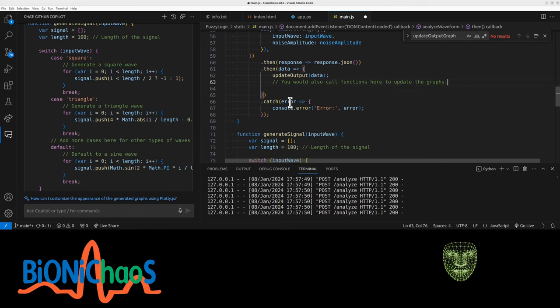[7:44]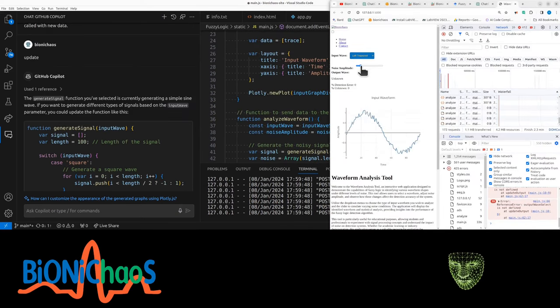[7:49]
And we can add the sinusoids as well. The square works. And the other triangle. Default is still sine wave. Case left trapezoid. Doesn't work. Square works. And there is no output. Don't have those functions, do we? No. Graph is updating. We have the noise. Everything doesn't work. Ends up being a sinusoid. And there is no output.
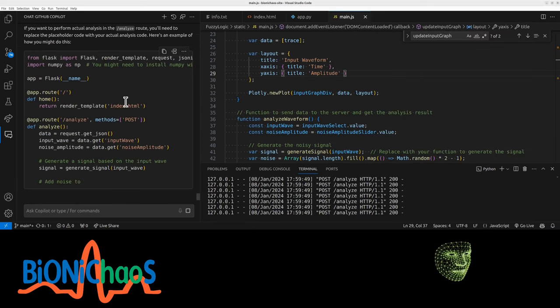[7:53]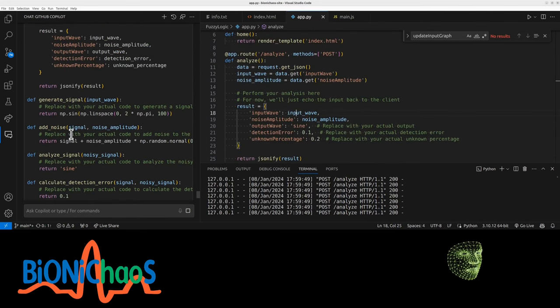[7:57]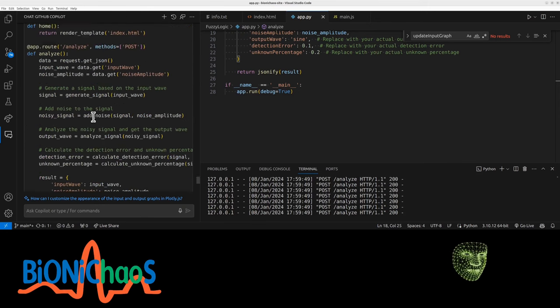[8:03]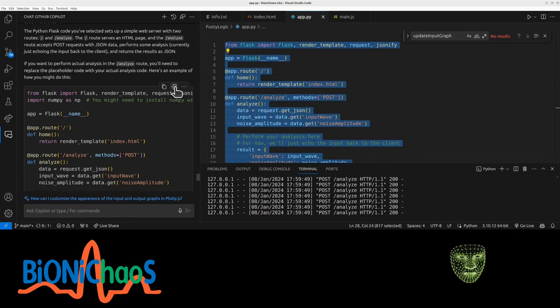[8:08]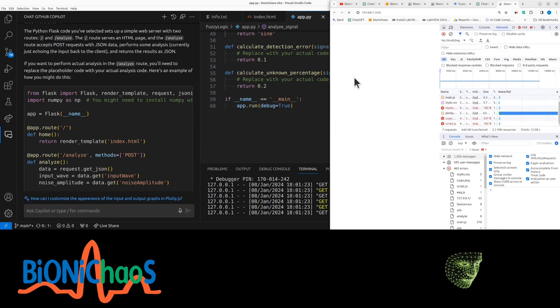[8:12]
The analyze doesn't do anything anymore, does it? Yeah, that's just a mock-up. Generate signal, add noise, analyze signal, calculate detection error, calculate unknown percentage. That sounds much better, doesn't it? Why couldn't you just do it to begin with? Not dropping frames anymore in my stream, but JavaScript is loading forever.
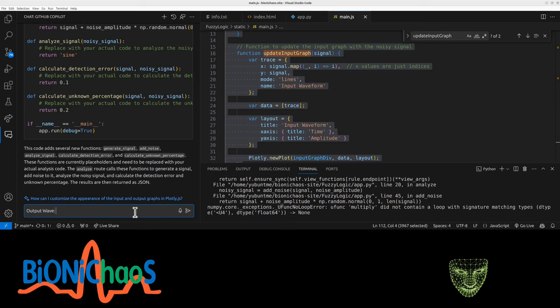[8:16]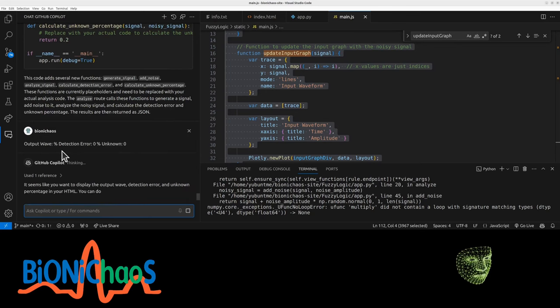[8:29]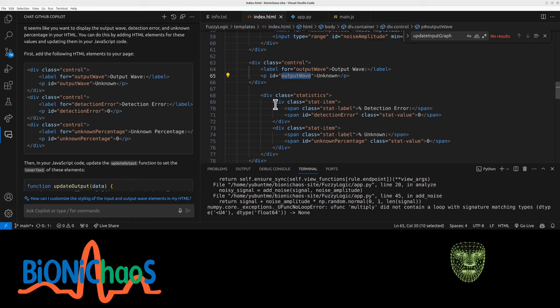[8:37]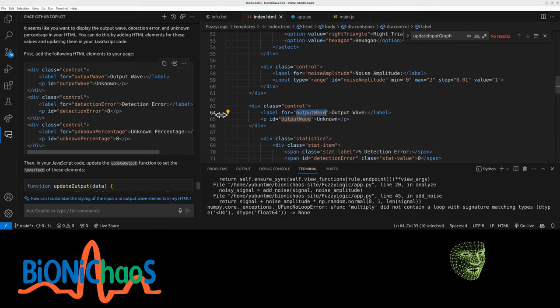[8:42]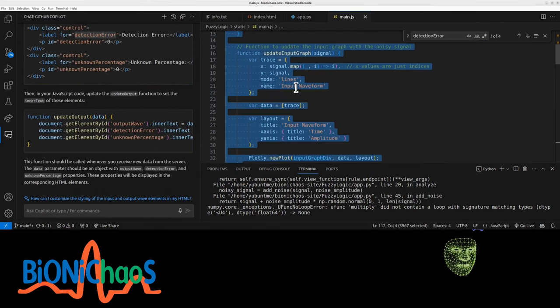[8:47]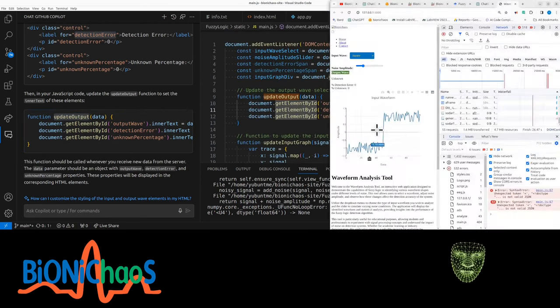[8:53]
Output wave is empty. Detection error is always 0%, unknown is always 0. It seems like you want to display the output wave, detection error and unknown percentages. in your HTML. Let's check HTML control. Output wave. You already have that. Detection output in JavaScript function. Do we have this function? Okay, it should be better.
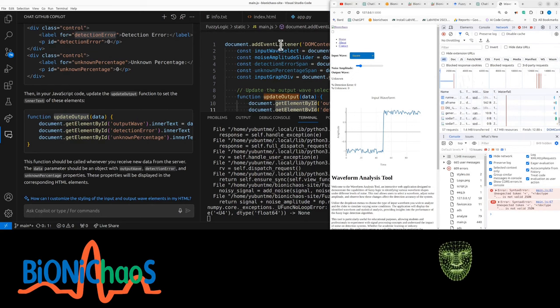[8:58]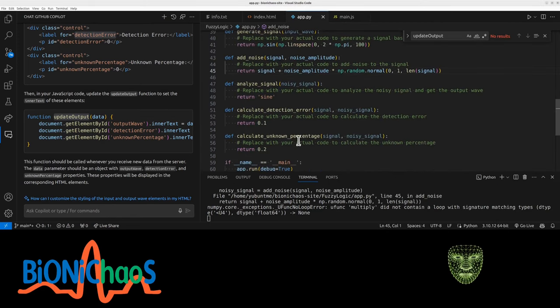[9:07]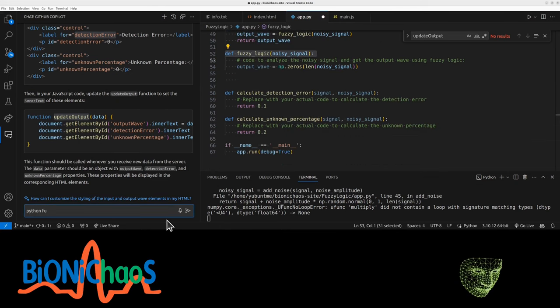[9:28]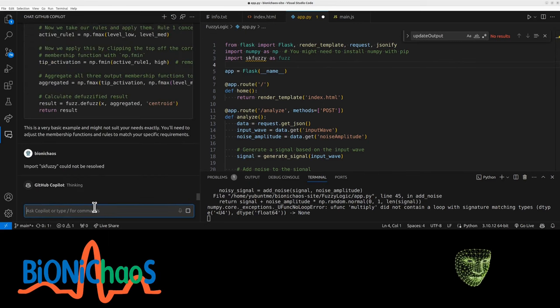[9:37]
It makes sense having an error in JavaScript at 67. That's where the error is from. Yeah, those are just templates. That doesn't work. Place your actual code to calculate unknown percentage. It should be signal, noise signal should be input and output. It should be using fuzzy logic. Yeah, okay. Python code should do fuzzy logic. Python fuzzy logic library. Yeah, this is not quite right. It's just an example. That's a good start to install this library.
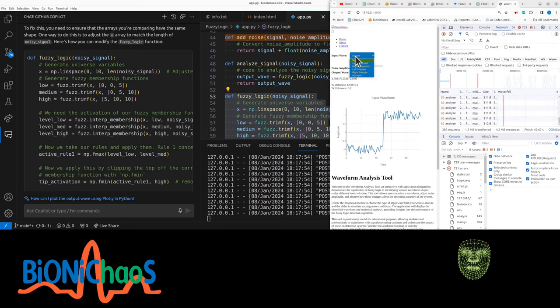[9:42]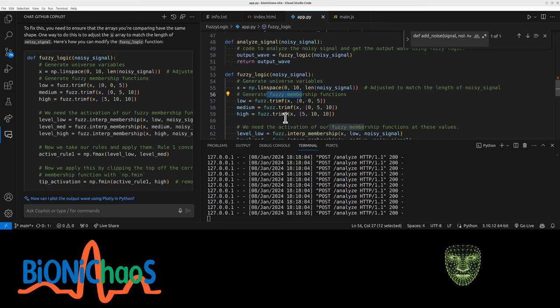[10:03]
So when it's not noisy, it's getting 2.5. When it's noisy, it's getting something else. Yeah, we need to change. So the one good thing about LabVIEW, which I'm not using anymore mainly because of the cost of the license, is that it had that toolkit for designing fuzzy logic. So these membership functions, essentially, are taking out the features from the signal.
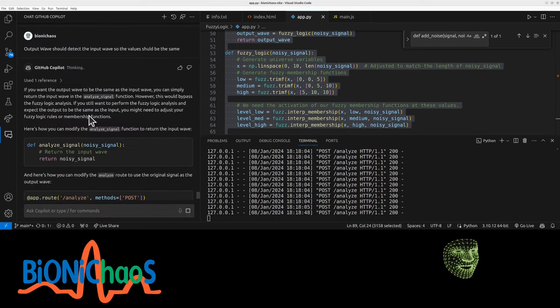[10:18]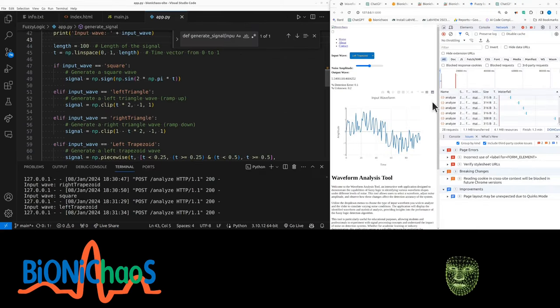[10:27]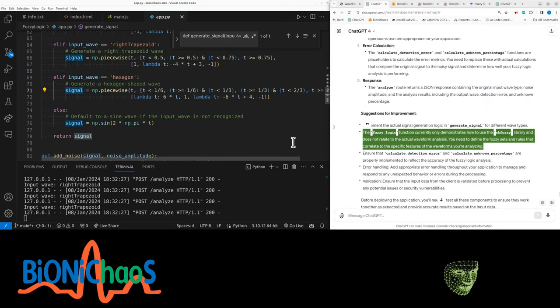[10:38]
One thing is for sure, output wave would predict, detect input wave. Now the values should be the same. You can simply return the input wave. Yes, we do want to perform the fuzzy logic. No, that would not do it. Any issues with the labels? Should have left them as they were. So it's giving me the sinusoid. Don't know why. Yeah, we need the fuzzy rules to be more than just a template.
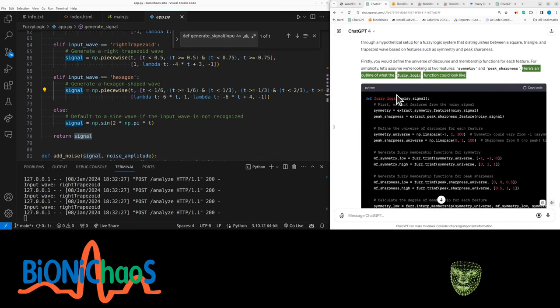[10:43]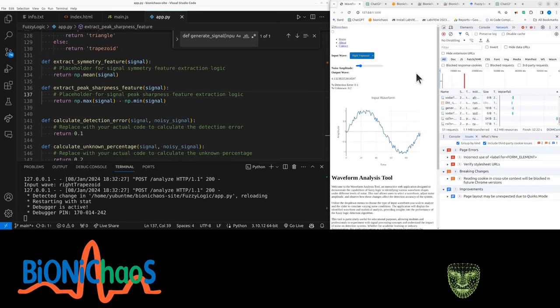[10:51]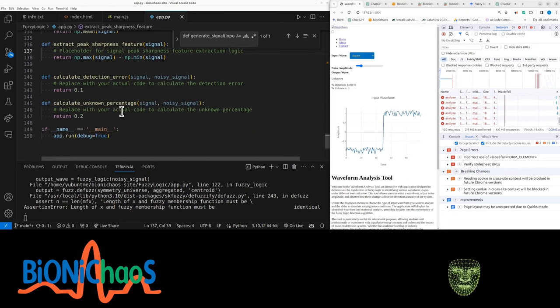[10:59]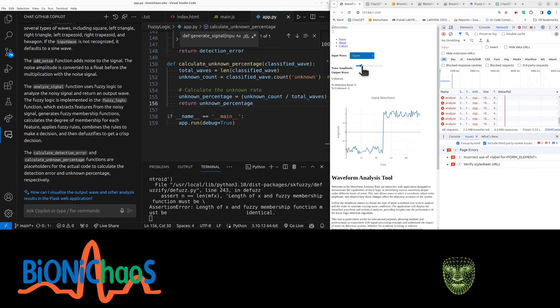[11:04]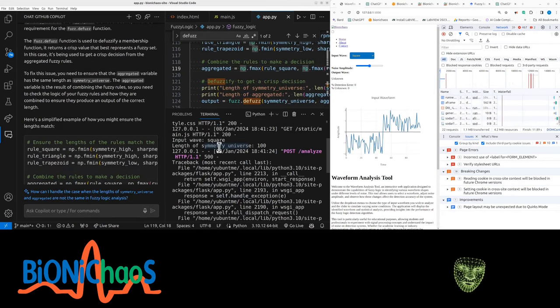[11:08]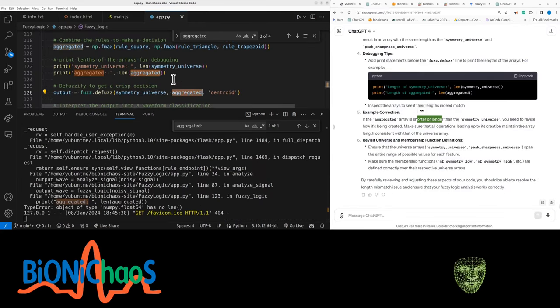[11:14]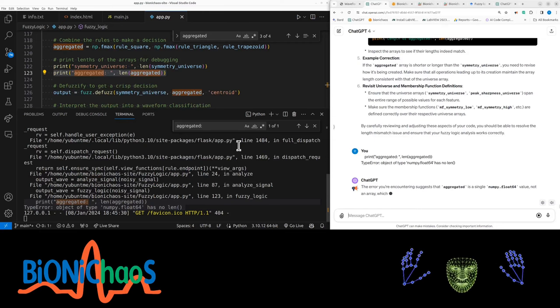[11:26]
So originally I think it was looking at three sensors, but this example is better because it's actually taking out the features. Still having some technical issues with the tool itself. It actually became worse. This output wave should be a text, obviously. You get a lot of errors. Let's clear this quickly. So the length of symmetry universe 100. Problem with this array, it doesn't have a length in it. It's actually an error message you didn't see. It's a float 64. Anyway, we'll have to troubleshoot it next time. I'll see you later. Bye.
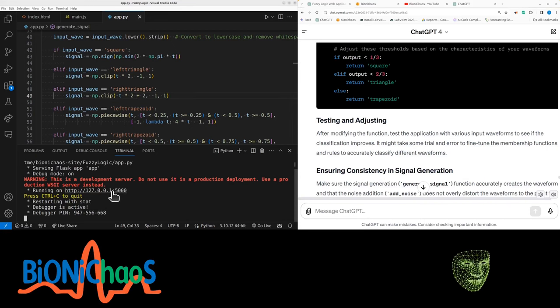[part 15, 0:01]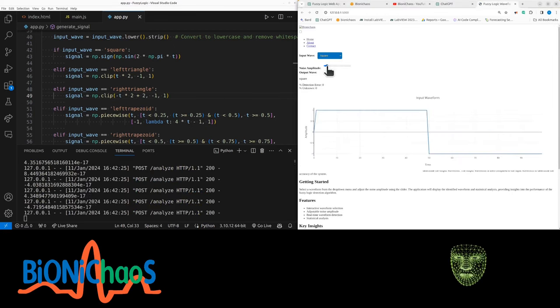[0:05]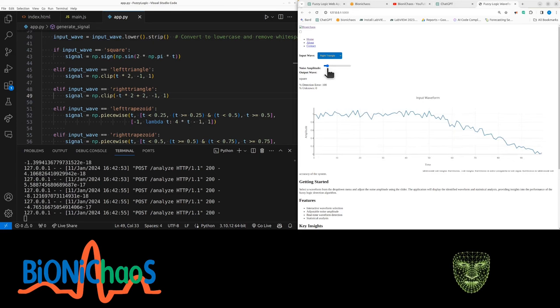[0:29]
It's a Flask app. This is what it looks like at the moment. It's generating these different waveforms. Can add noise on top of it, and there's a fuzzy logic detector. So essentially a classifier algorithm that should, in the output wave, detect the original input, measure detection error, and percent unknown. At the moment it's not really doing it, so we will be trying to improve it.
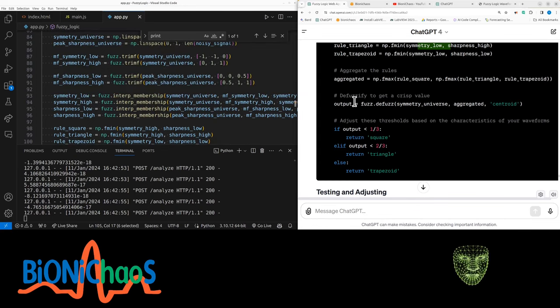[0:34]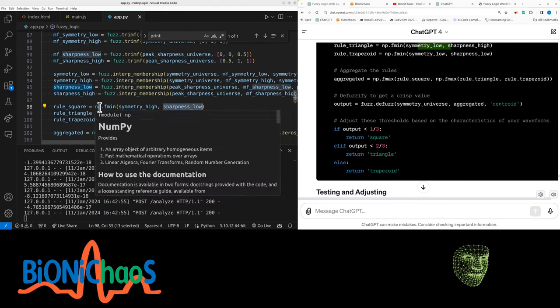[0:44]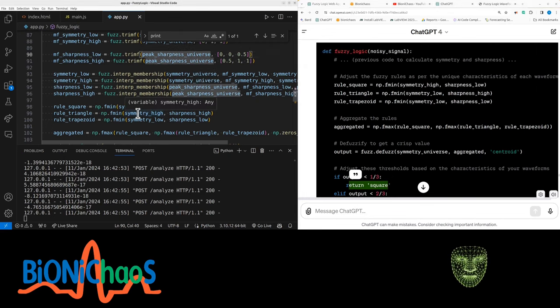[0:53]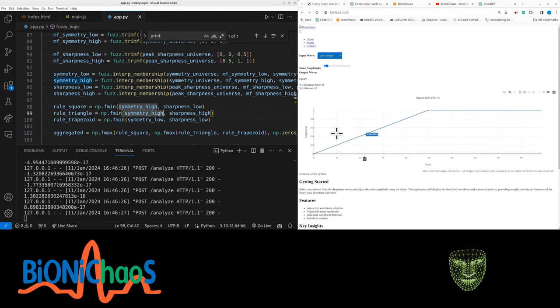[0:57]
We're essentially looking at two things, symmetry and sharpness, and then for each rule we should have those defined, and they don't have to be just high and low, they can be medium, high, low. So the main problem is that the output is way too low, it's always below 1/3, so it's always returning square. The symmetry of a triangle should be low. So symmetry is essentially comparing the first half of the signal to the second one.
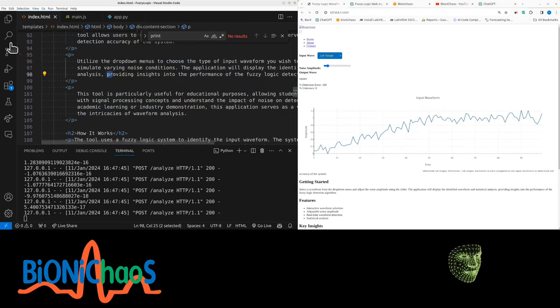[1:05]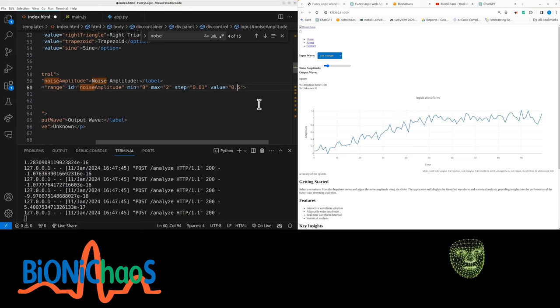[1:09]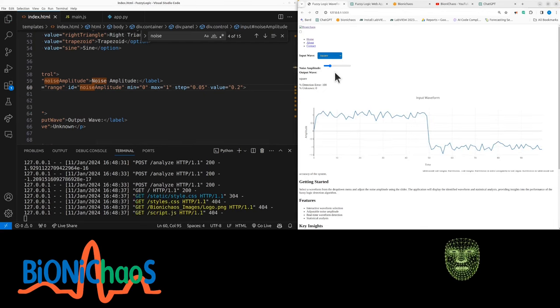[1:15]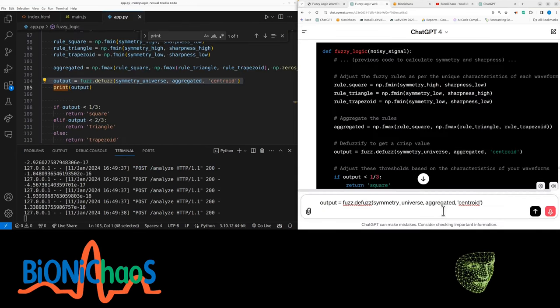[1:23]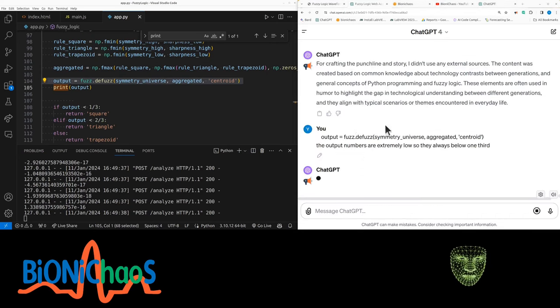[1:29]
The noise amplitude to begin with is too high. Here we can change that. Noise, 0.5 steps. Max should be 1. Let's make it 0.2 so we can actually see the signal. Right triangle, left triangle. The output numbers are extremely low, so they are always below 1/3.
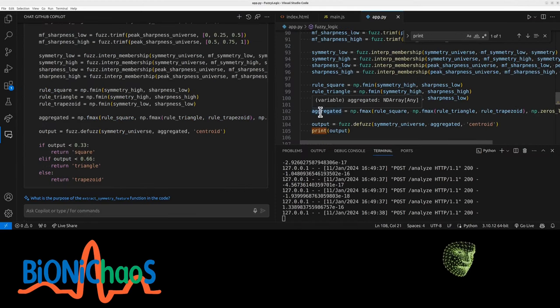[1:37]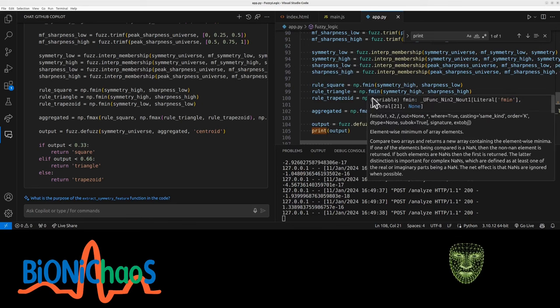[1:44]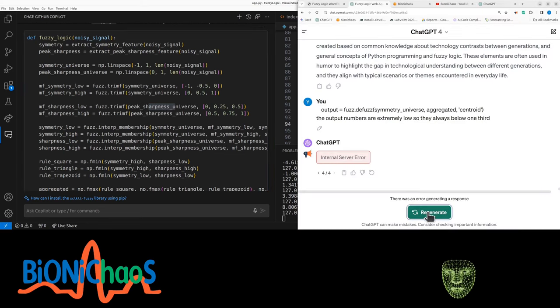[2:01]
GPT-4 is thinking forever. Let's try GitHub Copilot as well. For square, the symmetry should be high. No, actually, it doesn't make sense. We have to double check. I'm wondering if there is a way to display the fuzzy logic parameters. I mean, because that should be like an explainable AI, XAI. Can GPT just design the model for us? Currently it's not working at all.
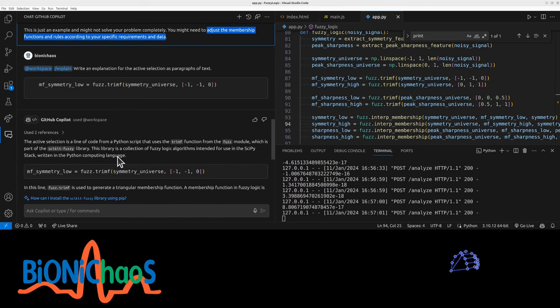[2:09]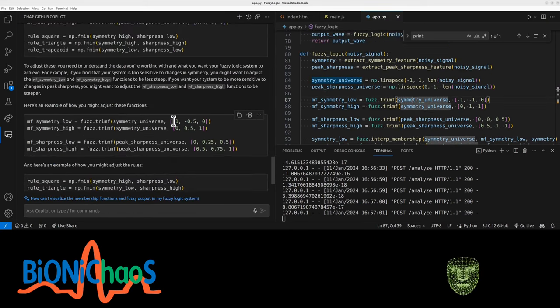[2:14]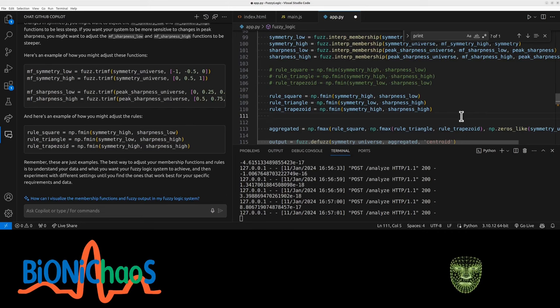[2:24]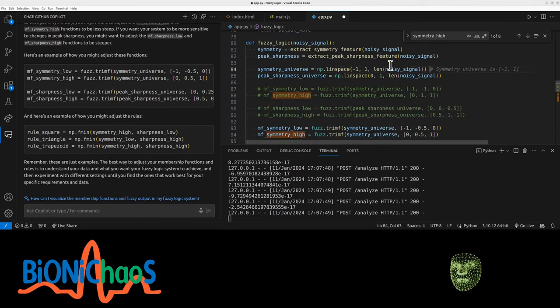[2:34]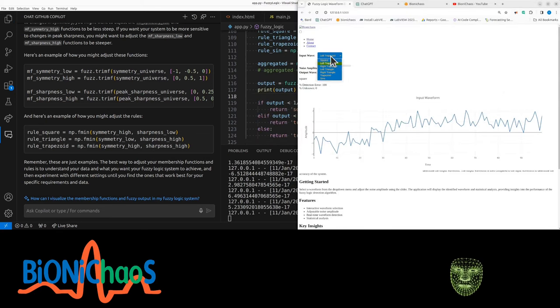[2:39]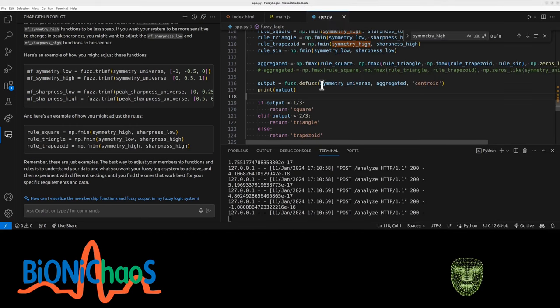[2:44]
And also before I never used the triangle membership function. So it used to be -1, -1, -0. Sharpness. Here's an example of how you might adjust the rules. We need the rules for the other, say for sinusoid. Symmetry low, sharpness low. Actually makes sense. Okay, that's just normalizing it, isn't it? Okay, but the point is, these numbers, the output, they're still super low.
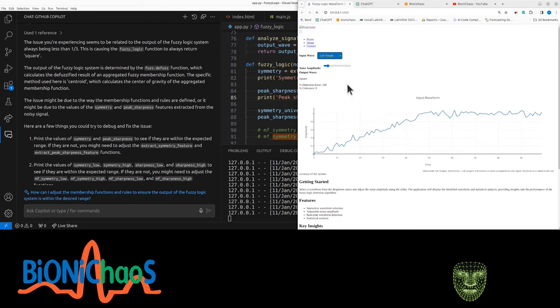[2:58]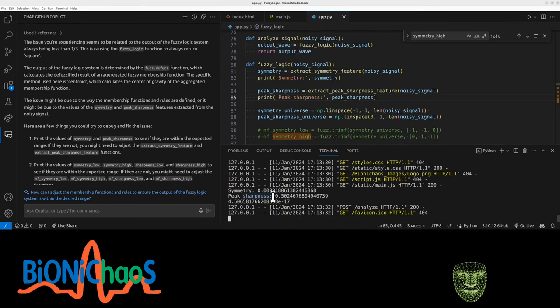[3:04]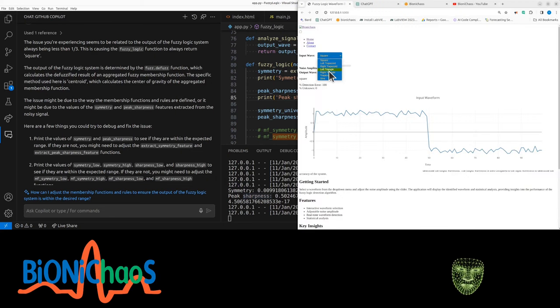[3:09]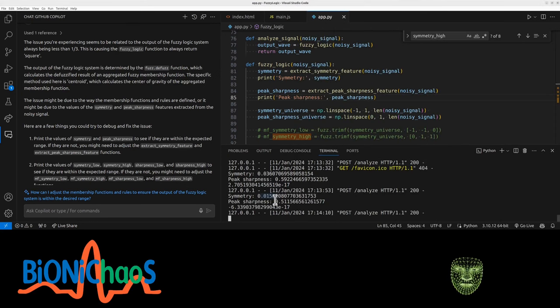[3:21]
Yeah, we have to go back to how the features are extracted from the signal. Yeah, let's print those numbers for troubleshooting. The default is square. Okay, so peak sharpness kind of makes sense. Symmetry is way too low. For a left triangle the peak sharpness should be higher. Yeah, it's higher, but not by much. Then symmetry remains low. Sine symmetry is even lower. Sharpness is low. Yeah, those numbers are not changing much.
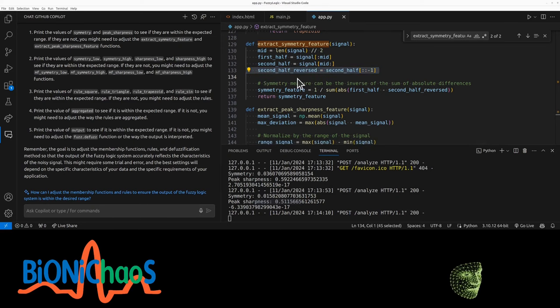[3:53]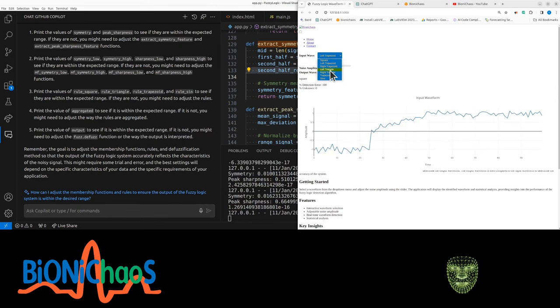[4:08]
We need to look at those functions extracting symmetry. So we're dividing the signal by 2, first half, second half, reverse the second half, and the symmetry measure is the inverse of the sum of the absolute differences. Yeah, this is a bad feature because, if the square function was actually different, it should have had the -1, then going to 1. So maybe if we shift left trapezoid. Yeah, we need to change those functions.
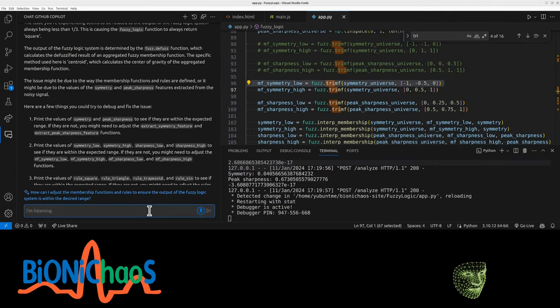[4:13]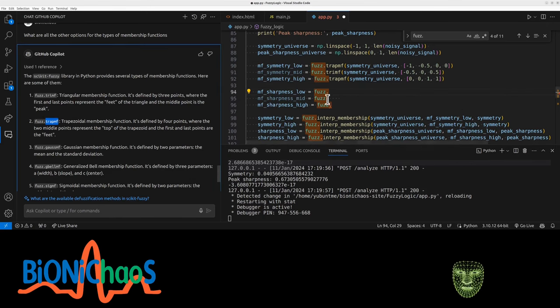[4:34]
What are all the other options for the types of membership functions? Triangle membership. Yeah, normally I was using trapezoid, Gaussian, sigmoid. Can we also add symmetry medium? Add the medium one. Add the trapezoidal 0.2. Yeah, you expect them to overlap. Right now, those mid ranges are not actually being used.
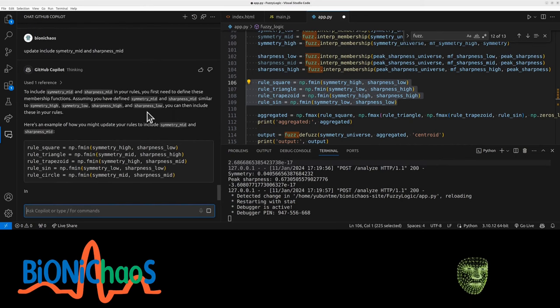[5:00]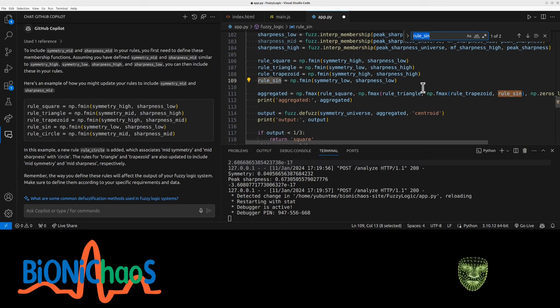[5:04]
So we have symmetry low. What rules should include the symmetry mid and sharpness mid? Include symmetry mid and sharpness mid. Yes, I did. Where did this circle come from? Does it make any sense? We really need GPT-4 to look at this.
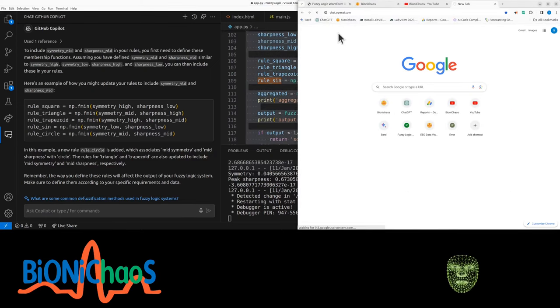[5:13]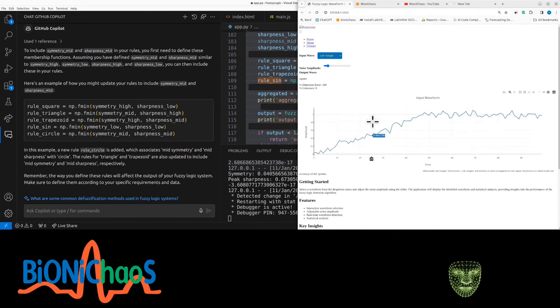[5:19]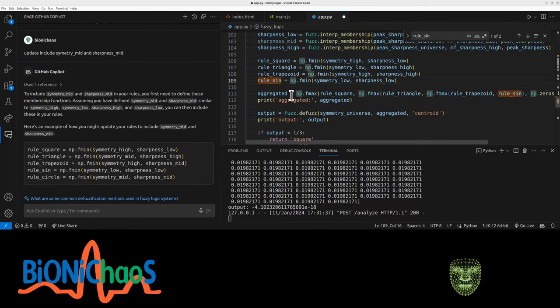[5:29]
Start a new chat. The website is down or something. Probably the CEO is gone again. It's kind of to be expected. Okay, the aggregated numbers also don't make sense. They're all the same. Why? Let's try to fix the whole code. Yeah, obviously ideally we would have had the visualization of the fuzzy logic rules and membership functions. Hey, we don't have it, just have to deal with it.
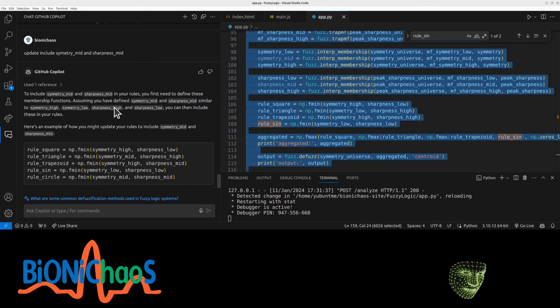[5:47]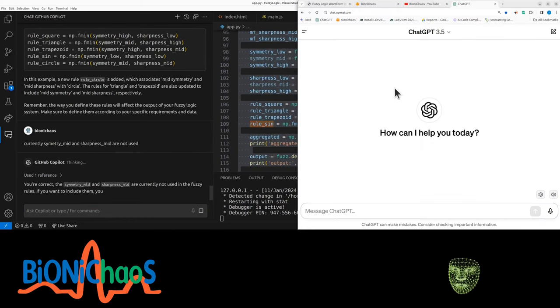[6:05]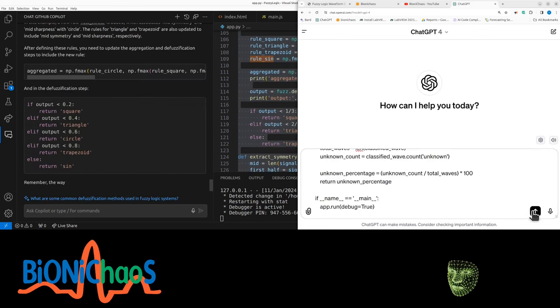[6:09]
Well, because we're using a language model anyway. Okay, so the current problem is that these two are not being used. Symmetry mid and sharpness mid are not used. Select the whole code because for GitHub Copilot it is important. GPT just refuses to work. Is it back online? I don't know. Our systems have detected... I don't know. Is anyone else getting those errors?
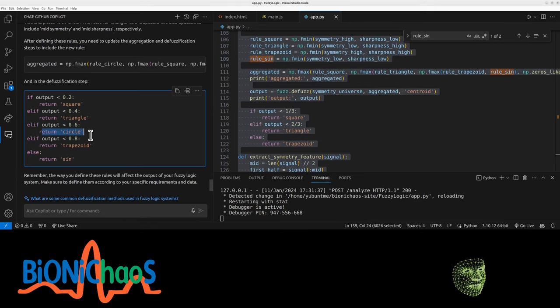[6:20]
Okay, why the circle? I don't have a circle. Where do you get a circle from? Currently not used fuzzy logic rules. Include them. You can create new rules. The new rule circle, which is associated with mid symmetry and mid sharpness.
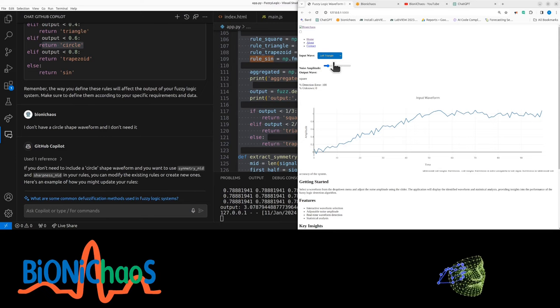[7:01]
No, I don't want it. Aggregation, defuzzification steps. I don't have a circle shape waveform and I don't need it. No, I do want to use the sharpness, the symmetry medium. So the idea is that we're looking at the symmetry and sharpness of the signal.
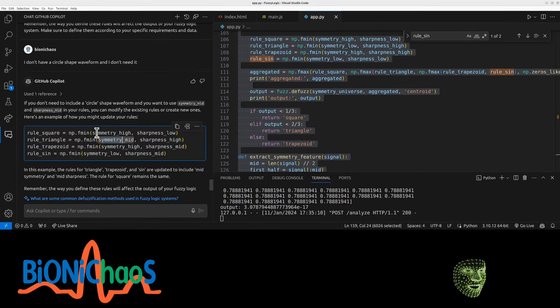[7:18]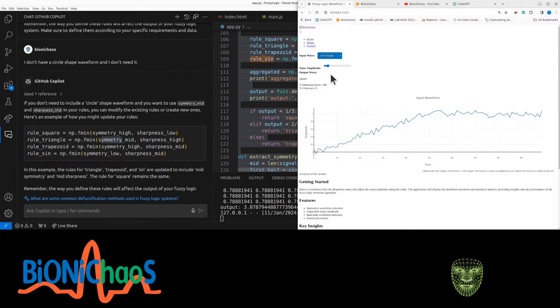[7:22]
Now we try to add three ranges for the two parameters. So you can have low, medium and high symmetry and same low, medium and high sharpness. So for square, the symmetry is high, sharpness is low. Yeah, it would have been correct if the square actually had this extra bit. So if it was asymmetrical, we can actually do it.
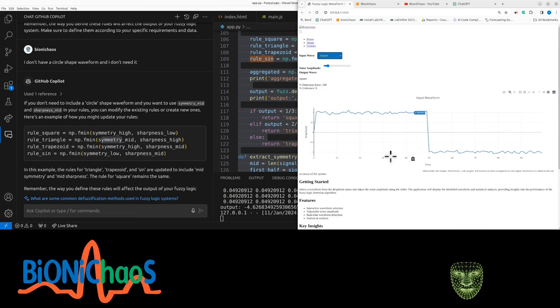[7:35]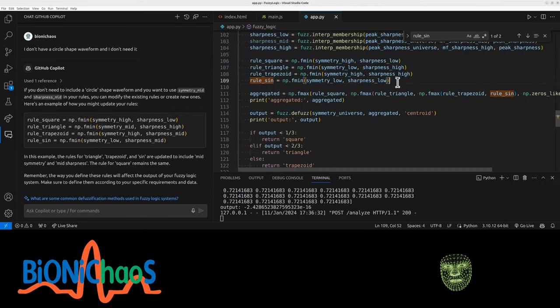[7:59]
Can adjust the square, triangle, symmetry, medium, sharpness, high. Okay, maybe trapezoid, symmetry, high. Yeah, trapezoid, definitely the symmetry is definitely high. Sharpness, okay, high if you say so. Yes, we can check a triangle versus trapezoid in terms of symmetry. Okay, let's comment that down for a sec.
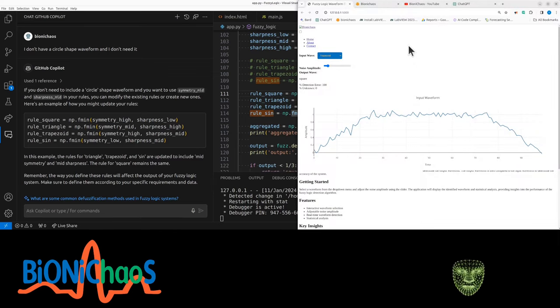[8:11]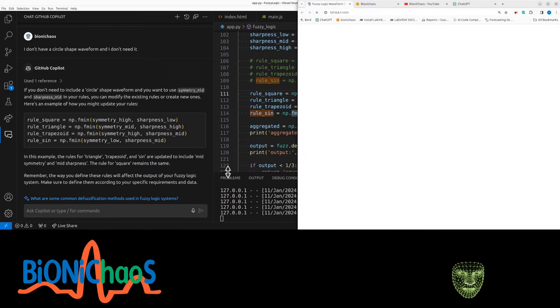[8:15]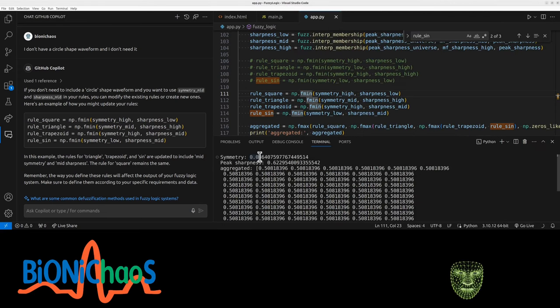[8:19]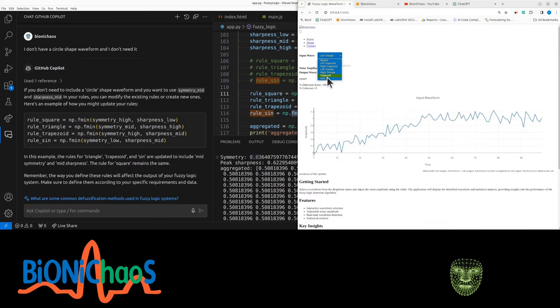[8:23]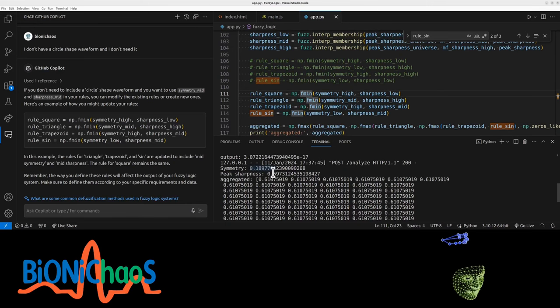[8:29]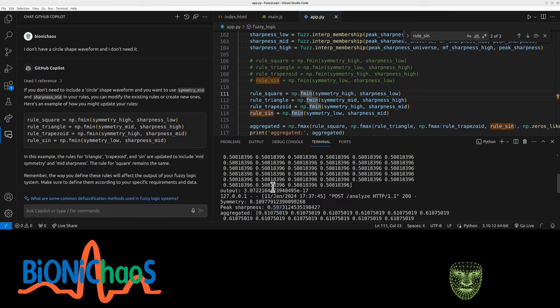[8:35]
Use this to test. We expect, let's see, and it's Control F5 this. So say if we're comparing left triangle symmetry 0.03 and the trapezoid symmetry 0.18, so yes, it's significantly higher, which is what we expect. And peak sharpness 0.6 for trapezoid and 0.6 for triangle. Okay, that doesn't make sense. Yeah, now the problem is still that these output numbers are extremely low.
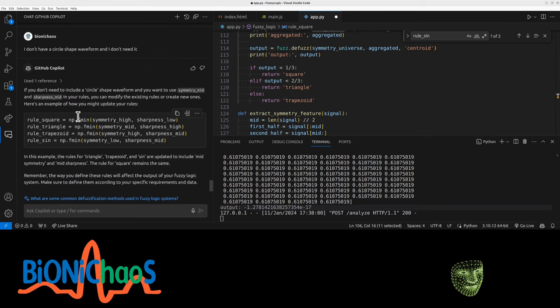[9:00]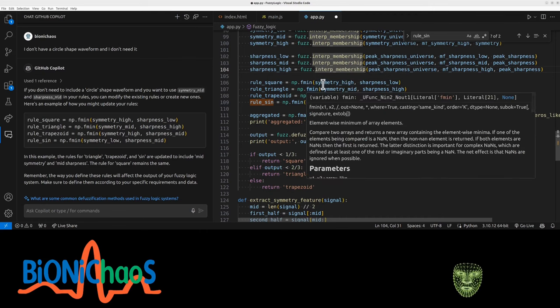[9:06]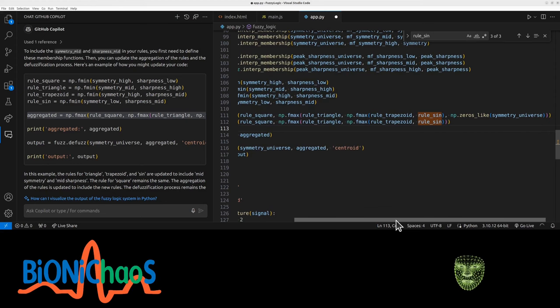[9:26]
Rule square. Right, so the output. No, we don't have the circle. We don't want the circle. So now we have three levels for each feature. Low, medium, high. I'm assuming this is correct. Do we need any more rules? No. Do we need to fix aggregated? We might. Do we need to update this? You're removing the zeros. And update your code to include mid symmetry and mid sharpness. Yeah, we need to explain that line. And this one remained the same.
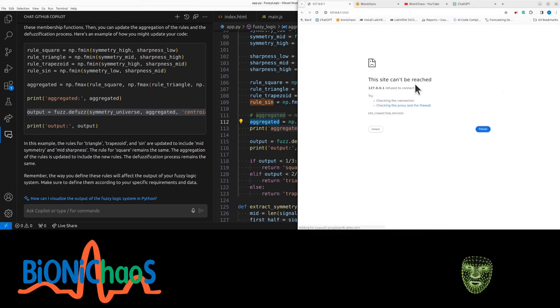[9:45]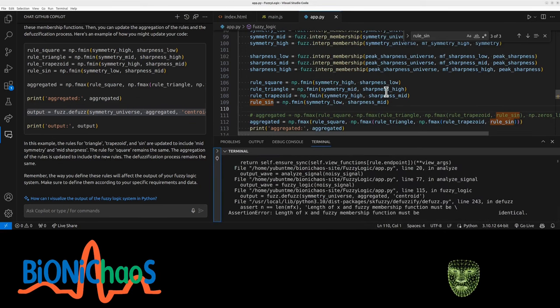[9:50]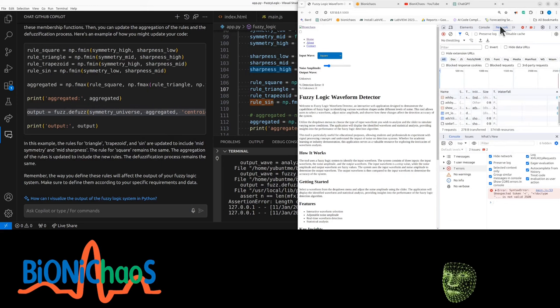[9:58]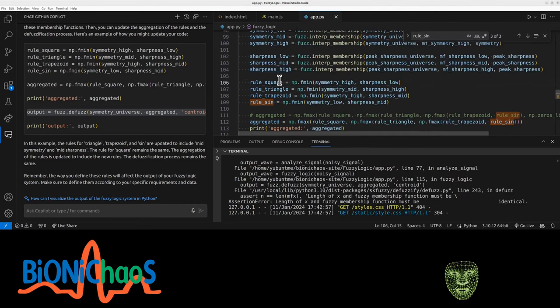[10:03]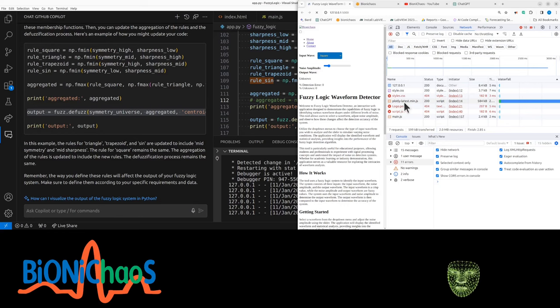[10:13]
The other problem is that aggregated values are all the same. Could be a problem. I don't know why it's loading forever as well. Loading forever. Yeah, no, it's loading forever because it's still loading that JavaScript. Having an error as well. That's because I do need those zeros. It just doesn't work without them. Yeah, the Plotly min JS is loading forever. Hopefully it's only because I'm live streaming at the moment.
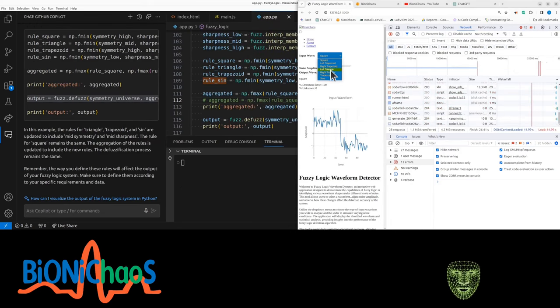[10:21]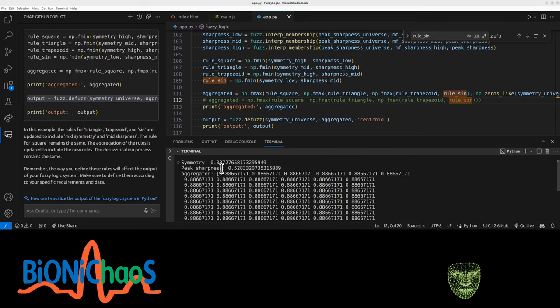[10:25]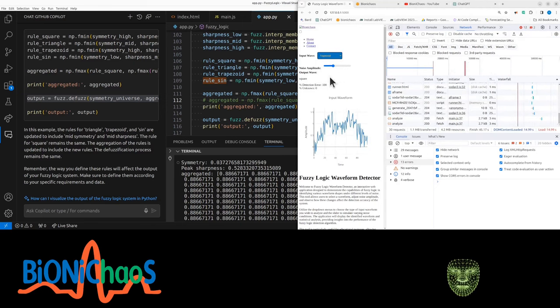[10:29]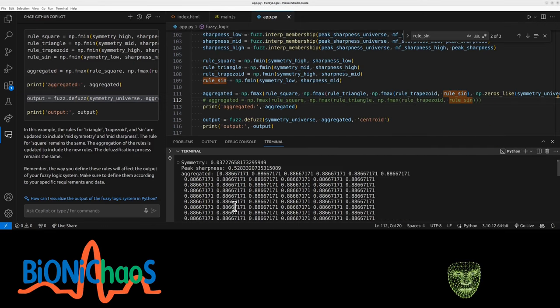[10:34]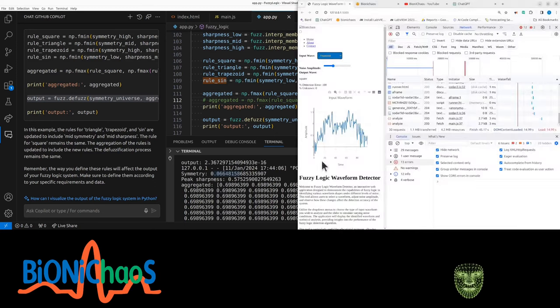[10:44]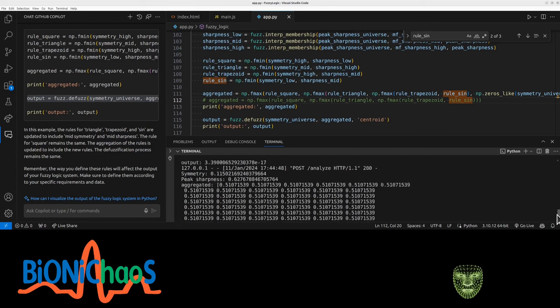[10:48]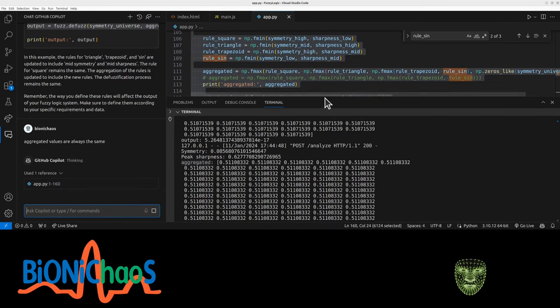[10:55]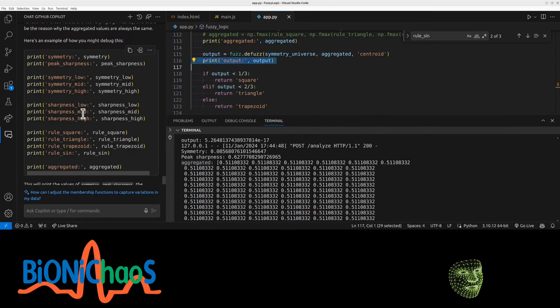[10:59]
So say we have left triangle symmetry 0.03, peak sharpness 0.52, and we have a trapezoid symmetry 0.06. So it's like double, but it's still a very low number. And sharpness increased as well, which actually does not make sense. And is aggregated always meant to have the same numbers? Aggregated values are always the same. So returning sharpness low, pop it in here, starting some heavy troubleshooting. Peak sharpness, symmetry, then we have the rules, the four rules, and aggregated and output.
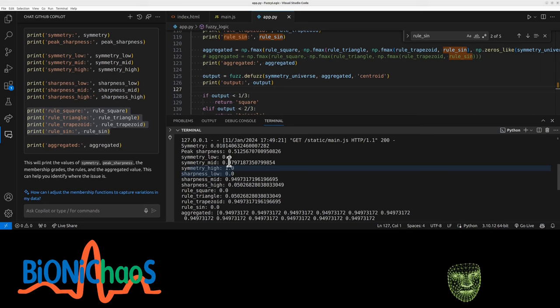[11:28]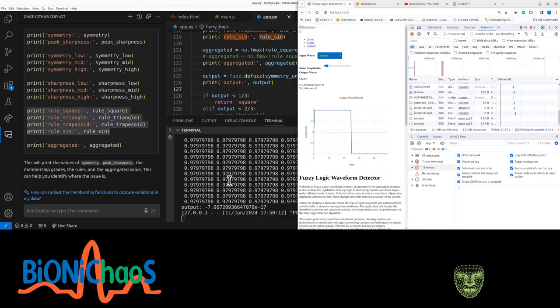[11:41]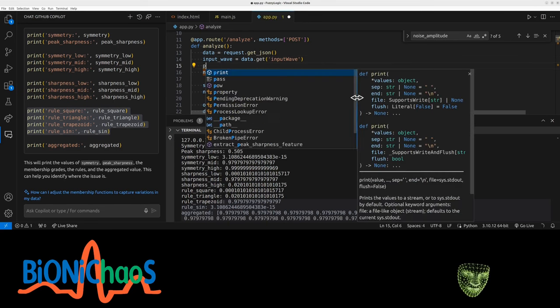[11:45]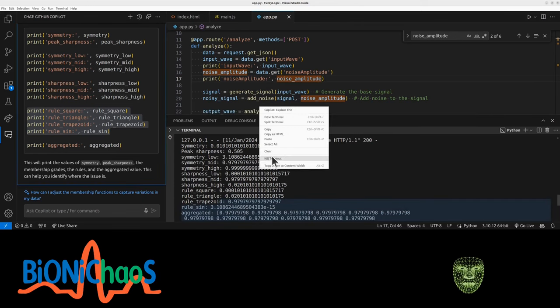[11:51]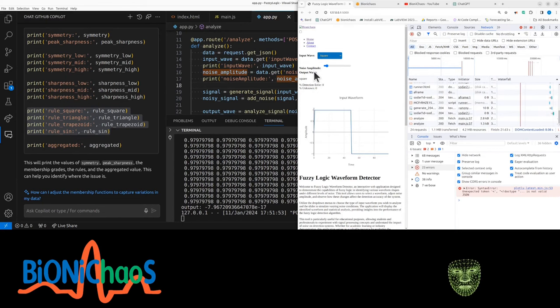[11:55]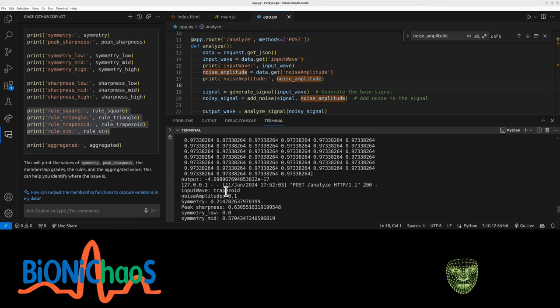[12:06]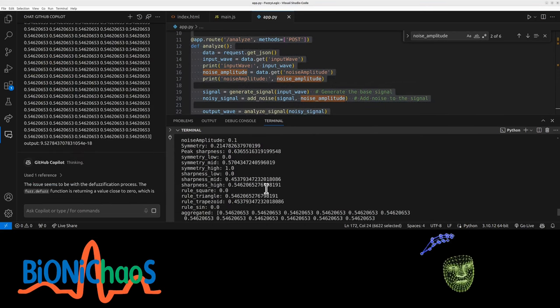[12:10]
Right, so this is what we get for square. Okay, it seems like those numbers are saturated. So need to add square and the input signal and the amount of noise. Shall we make noise zero? Let's print input wave and noise amplitude. That's right. Okay, output is 2.6. Now the output is even smaller. Getting an error, I think, from when the noise is too low. This trapezoid noise amplitude. So essentially fixing our model. Bring this very close to zero, which is not expected.
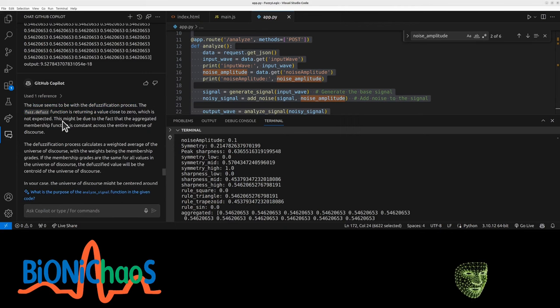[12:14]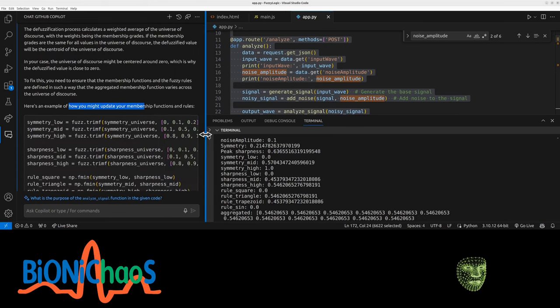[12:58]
This might be due to the fact that the aggregate membership function is constant across the entire universe. That's a good sentence. Constant across the entire universe of discourse, whatever that means. The defuzzification process calculates the weighted average of the universe of discourse, with the weights being the membership grades. If the membership grades are the same for all values in the universe, the defuzzified value will be the centroid. In this case, to fix this, you need to ensure the membership functions are defined in such a way that the aggregate membership function varies across the universe. Here's an example of how I might update your membership functions and rules.
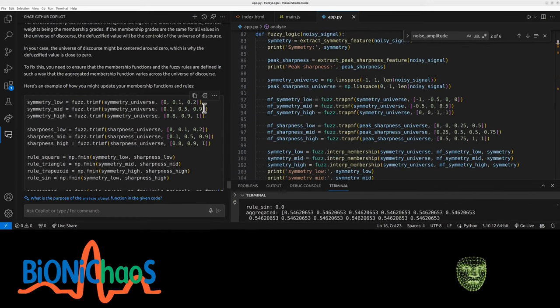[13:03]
Symmetry. Okay, but this will essentially just make all the symmetry medium. And it's back to triangle. Why is it back to triangle? Like triangles as a membership function. It's reverting to that line. Problem with it is that it doesn't work, getting errors for it.
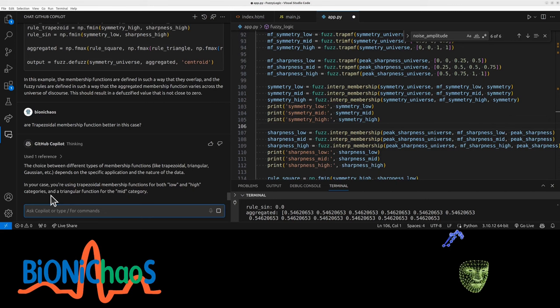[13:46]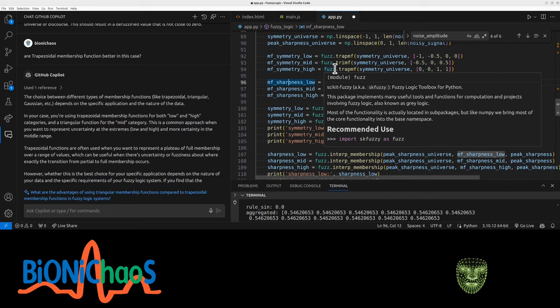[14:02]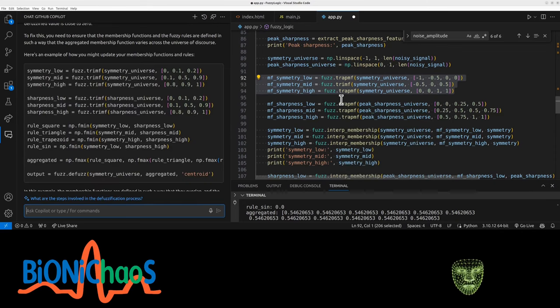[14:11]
In such a way that they overlap, a trapezoid membership function better in this case. So triangle, Gaussian depends on specific application. It is, if you are using trapezoid membership functions for both low and high, and a triangle for the mid category, this common approach. Actually, this makes a lot of sense for a change. Okay, can you actually do that? Even though the mid one could be trapezoidal as well, there's no problem. Okay, let's go with what it's suggesting over here.
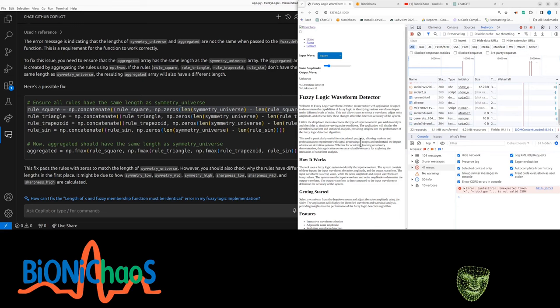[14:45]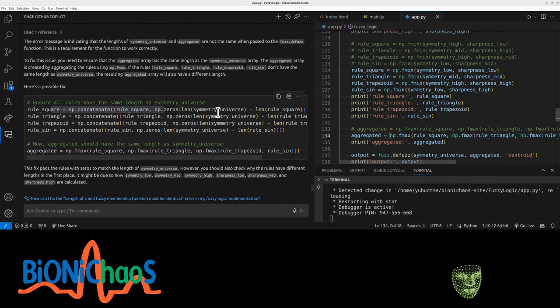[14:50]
It is symmetry low. Comment that out, sharpness, rule, square, mid, mid, high, high, low, high, aggregated, that one again, just go with it for a sec, and output is the same, so we know this works. And let's actually go with that suggestion.
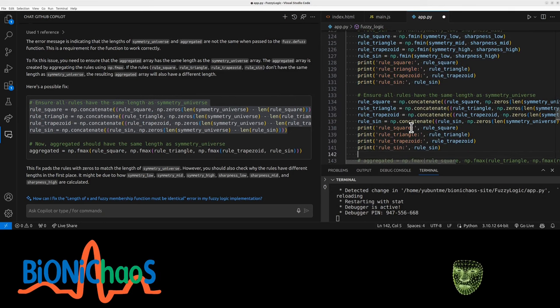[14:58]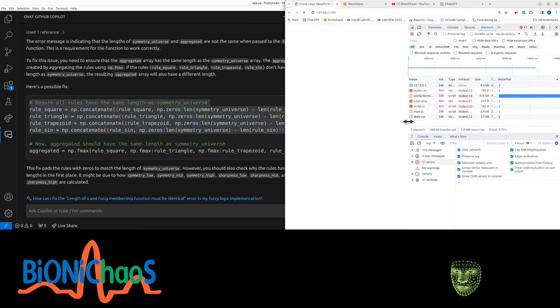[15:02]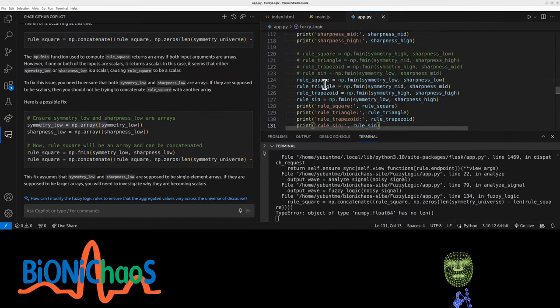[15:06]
We're taking the original rule square, actually print it again. This after concatenation. Test this again. How was it working before? I thought it wasn't an array. Is the symmetry low? Why are they becoming scalars?
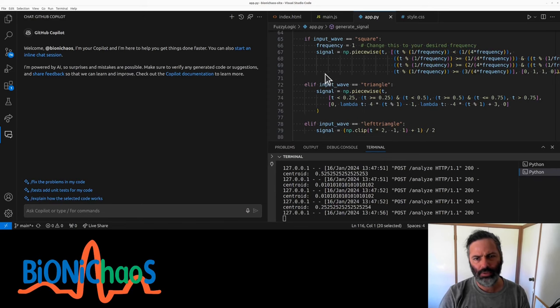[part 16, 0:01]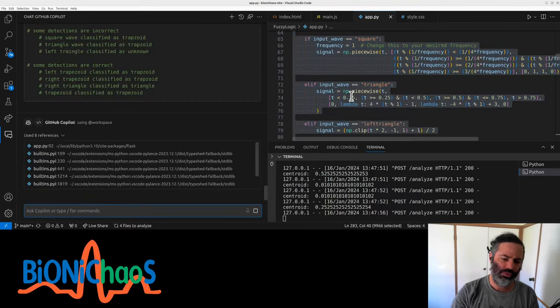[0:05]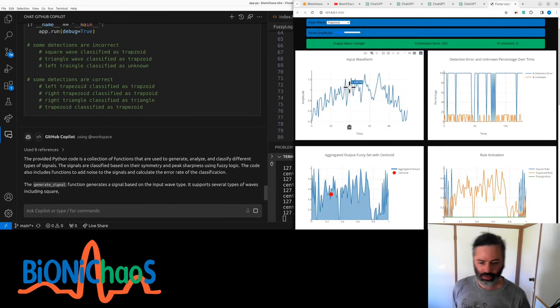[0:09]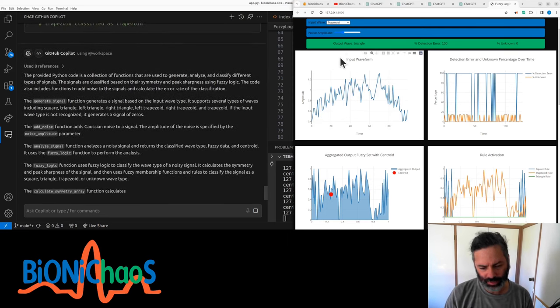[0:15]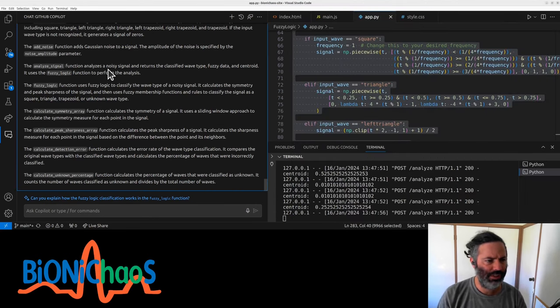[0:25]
So there's a couple of options for improvement. We could add another feature. I think two should suffice for now. It's okay to make some mistakes, it's fine. Just try to learn. Questions: how can we improve the centroid function?
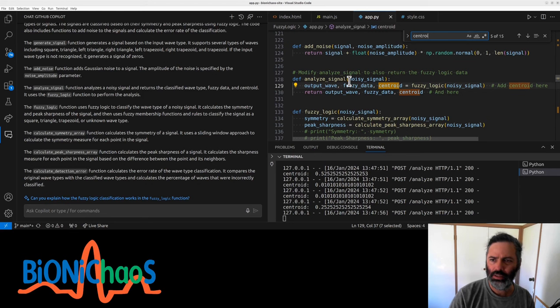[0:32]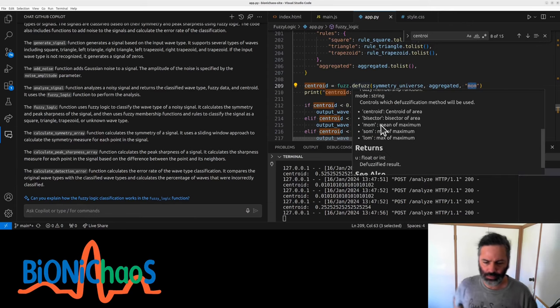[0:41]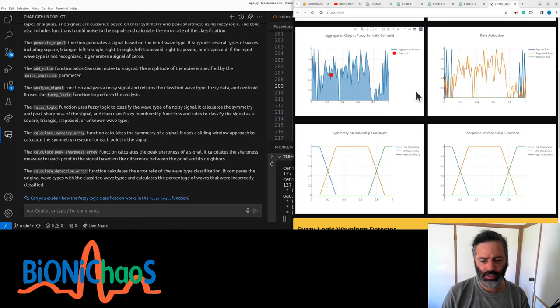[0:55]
We also had a funny centroid that wasn't a standard one. It's the minimum of a mean of maximum. Centroid of area would obviously be a more standard thing to use. Yeah, we actually expected it to work with a centroid. Everything should be more or less standard.
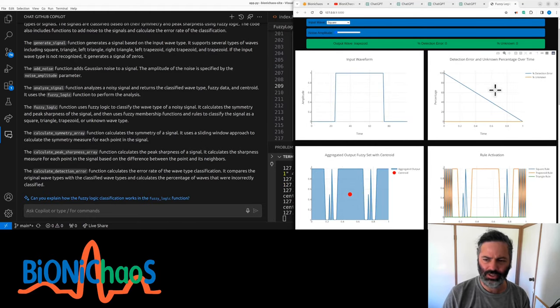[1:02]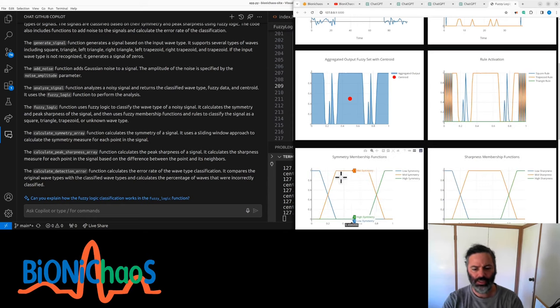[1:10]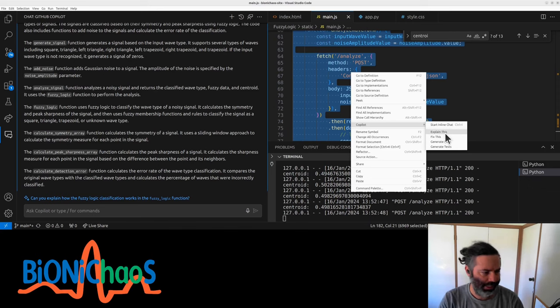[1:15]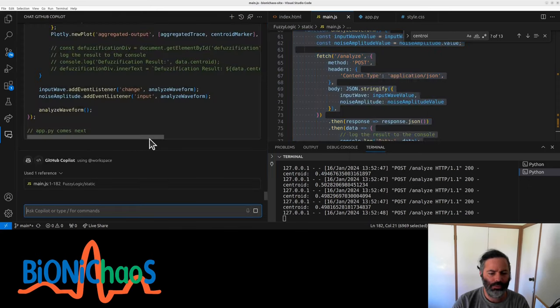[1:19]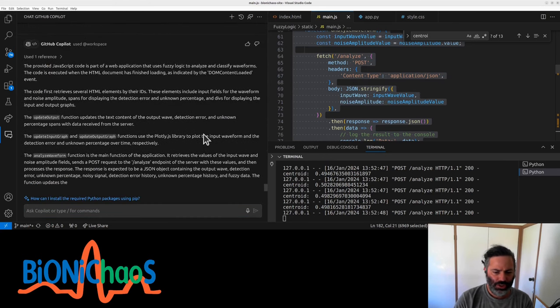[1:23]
The white detection error went from 100 to, yeah, now square doesn't ever give square. We also need to monitor the features for each selected waveform. Monitor the features. The JavaScript should be pretty straightforward because most of the stuff we're doing in the backend is
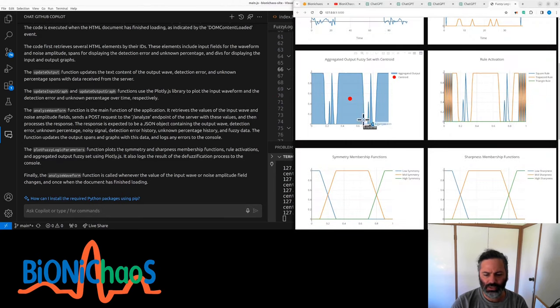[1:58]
not ideal for a biomedical tool. We should be doing everything on the front end, on the client side. Then you will have options to do more on the back end, on the server side. That server can be costly, and considering these tools are free, I want you to spend electricity and not overload my server as much as possible.
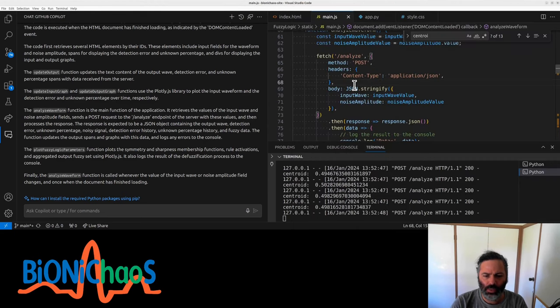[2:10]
Question. So if we load all the code, in theory we should have been able to use this workspace. Can you explain the link between the files in the workspace? So it's getting errors when using workspace. It's essentially collecting too much stuff or something. I don't know what's up with that.
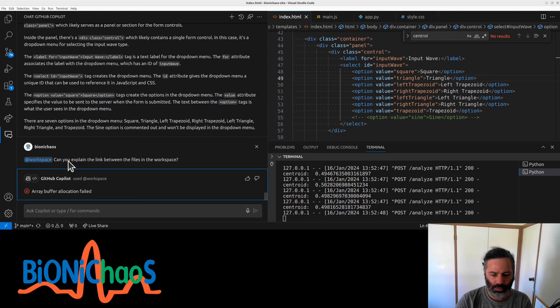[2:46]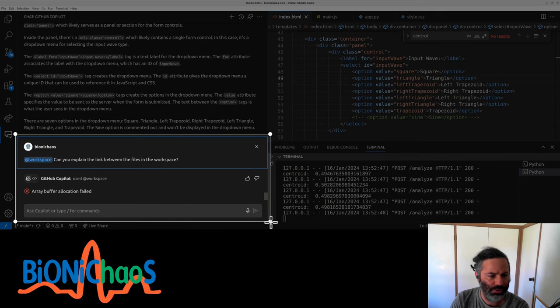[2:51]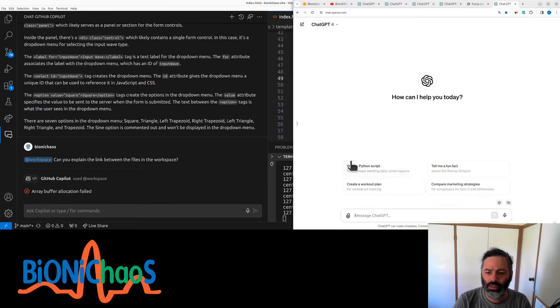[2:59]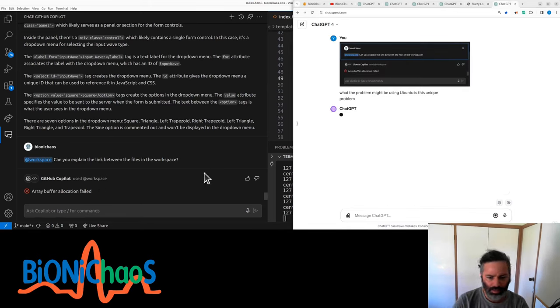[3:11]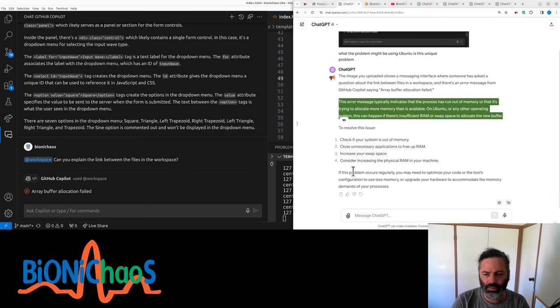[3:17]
I bet it will work on Windows. Curious if I can just do this. Send it to a GPT. See what it says, what the problem might be. I'm using Ubuntu. Is this a unique problem? I get this array buffer allocation error, failed. Nah, this can't be right. I have plenty of RAM.
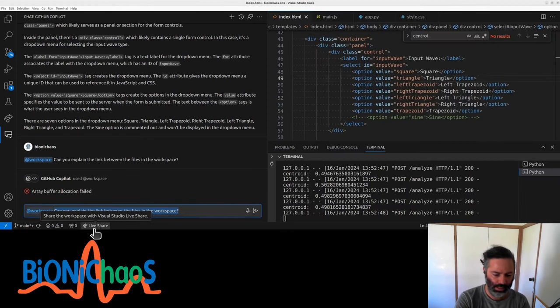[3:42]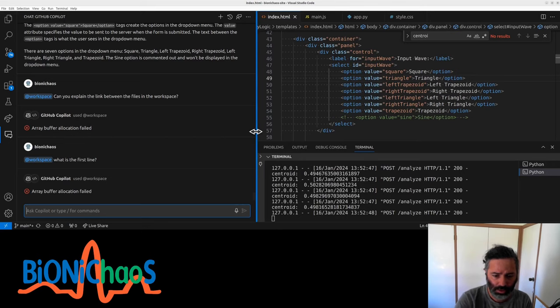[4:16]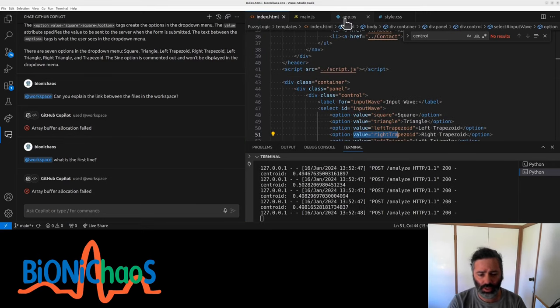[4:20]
I think it's also happening on the server side. I do have plenty of RAM. I think the problem is happening on the server side of GitHub Copilot. Can monitor memory usage, but that won't be it, would it? It should be a more simple command for Copilot, so I don't know. Anyway, it doesn't seem to work on Ubuntu properly, at least the workspace command, which is meant to look at all the open files. It's collecting workspace structure. Yeah, buffer allocation. No, there's nothing wrong. It's using hardly any memory on my machine. Guess we asked about each file, to explain each file.
Let's go back to the JavaScript. We need to modify the fuzzy logic parameters. What are we currently looking at? What are we visualizing in terms of the fuzzy logic parameters? To change them, do we need to visualize other parameters?
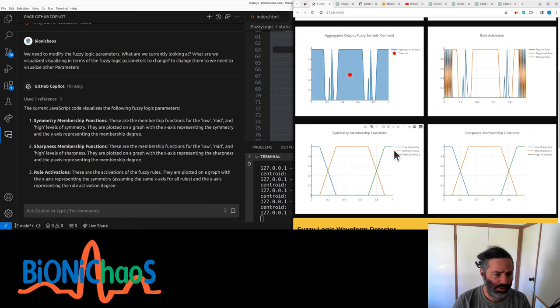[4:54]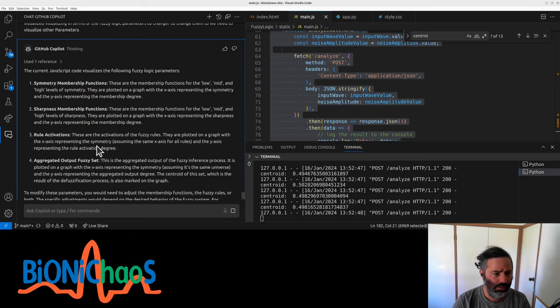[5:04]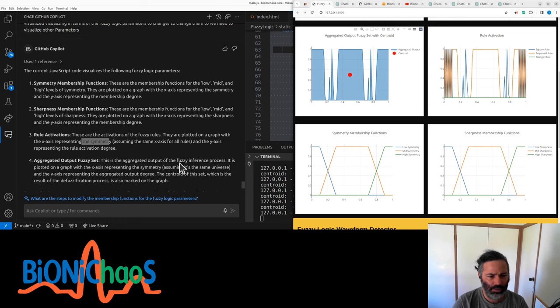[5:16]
Yes, so we have the membership functions, symmetry and sharpness. We have the rule activation, plotted on the x-axis representing symmetry, assuming the same x-axis for all rules. Okay, this is odd. And the aggregated output of the fuzzy inference process is plotted as a graph on the x-axis representing symmetry. So rule activation, but the rule activation is working for both symmetry and sharpness. Yeah, we do need to modify fuzzy rules to change how the system makes decisions, because currently it's making a lot of mistakes.
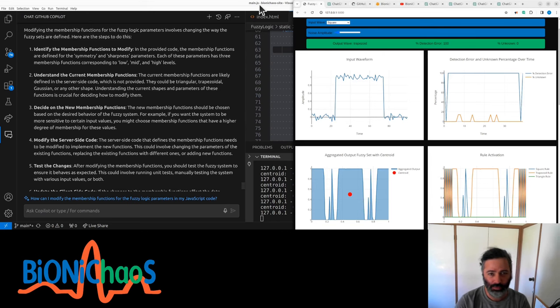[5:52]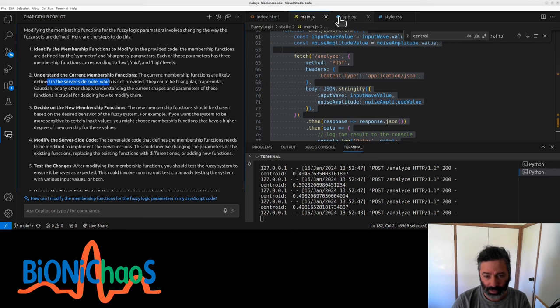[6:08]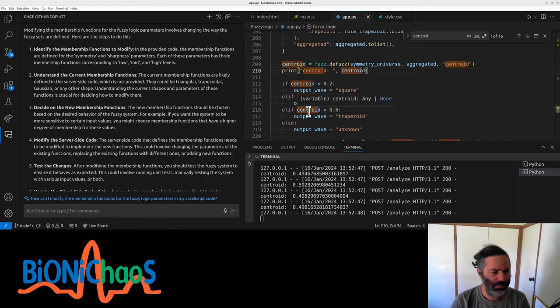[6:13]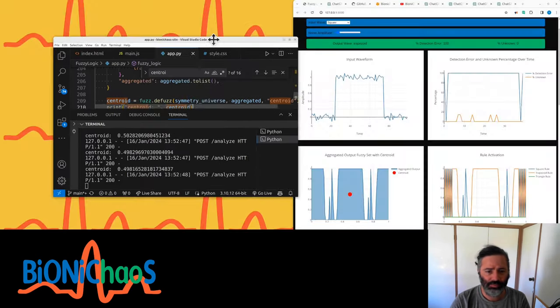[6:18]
Depending on the nature of the parameters, for example, if you want to visualize input fuzzy sets, do we need the input fuzzy sets? Yeah, so we have both symmetry and sharpness parameters in low, mid, high. Should be able to view the input. Yeah, it keeps saying stuff is not provided on the server side, even though we did provide the Python code. We should be able to plot. Yeah, that's the problem if Copilot doesn't have all the context.
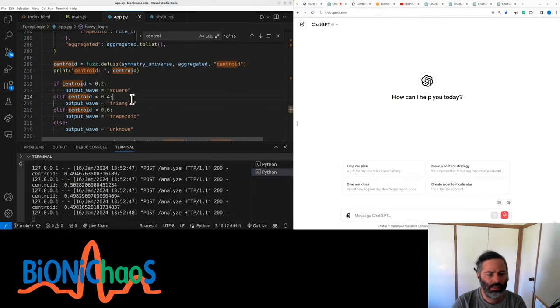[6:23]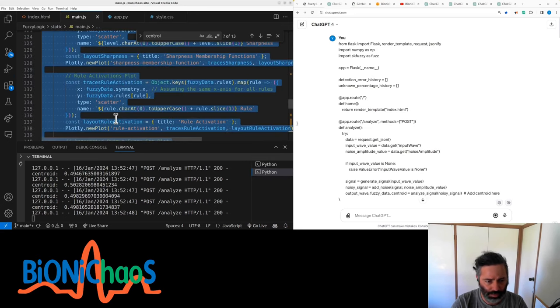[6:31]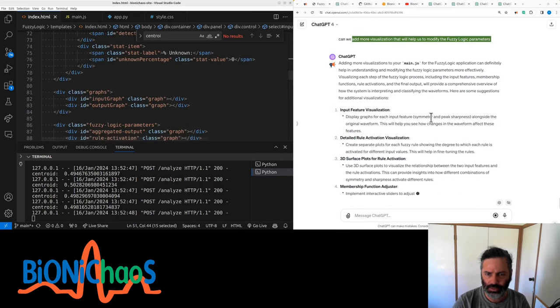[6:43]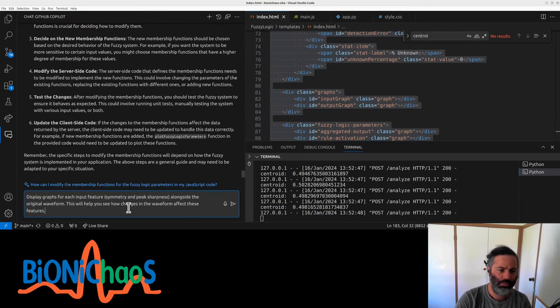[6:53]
Let's do this quickly. Do it in a different order. Okay, can we add more visualization that will help us to modify the fuzzy logic parameters? The HTML should be pretty straightforward. Copilot to change the code. So we have the prompt. Well, it's not quite a prompt. Should have asked to turn it into a prompt.
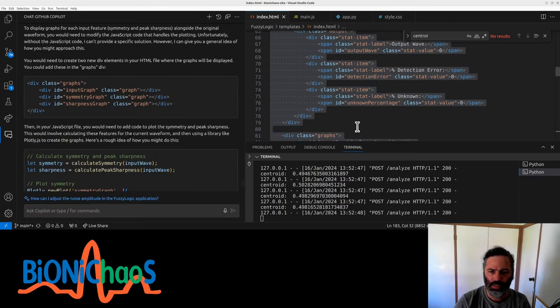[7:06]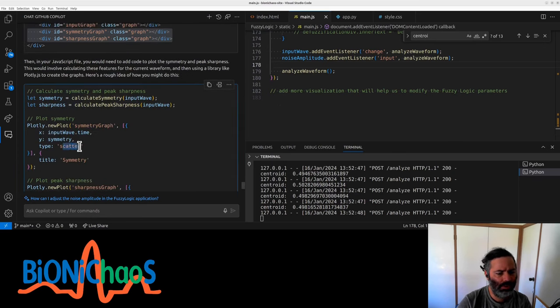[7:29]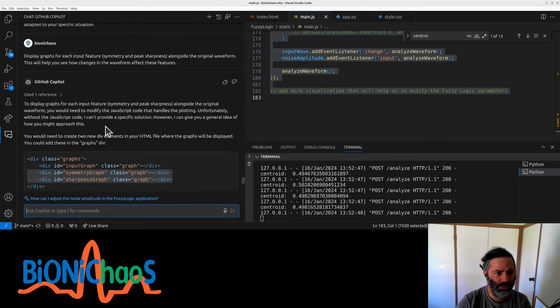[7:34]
Yeah, of course, we need to modify the JavaScript and the HTML. I want to edit the HTML. Where do we put it? It's the output graphs. We have the input graph, output graph. Place these two over here. I obviously have a problem of fitting everything into that one window. Then the JavaScript. So it's a scatter plot. That makes sense. Turn this into a prompt.
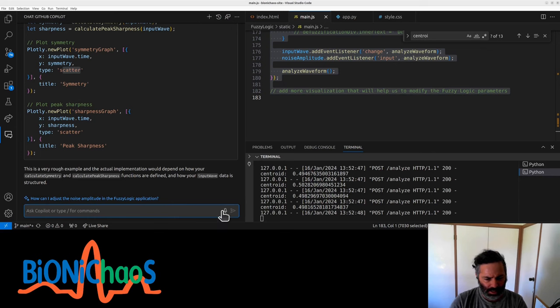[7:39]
I don't know. In theory, it's using GPT, but in reality, yeah, probably shouldn't be asking silly questions like that. I should just give it. Does it know of a previous prompt? How to modify the code based on the previous prompt?
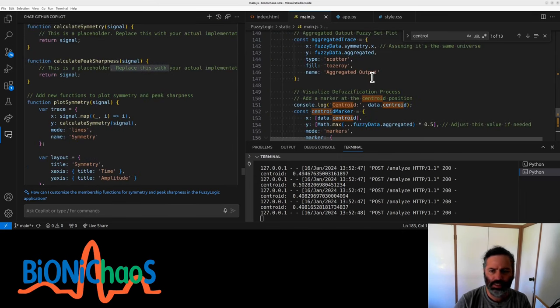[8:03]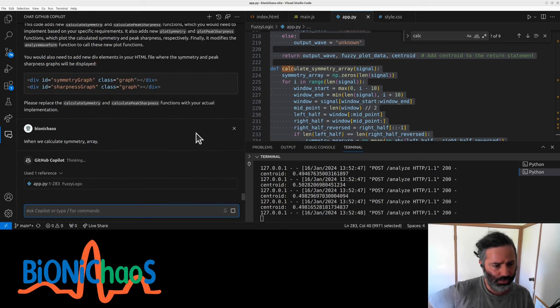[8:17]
Now, why are we calculating symmetry? Doesn't make any sense. We already calculated the array, so we'll have to calculate. Wait, why is this? We have it in the back end. We need to pass it to the front end. When we calculate symmetry array, can we turn it into one number?
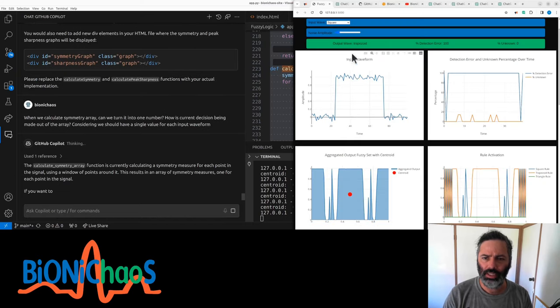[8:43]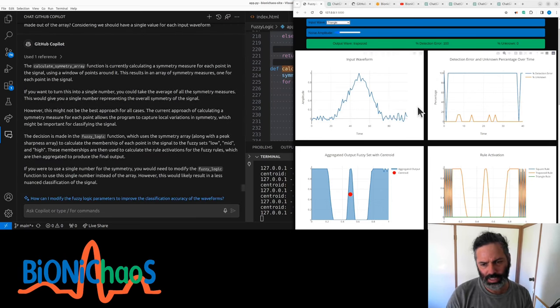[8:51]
How is the current decision being made out of the array, considering we should have a single value for each input waveform? Essentially, what I don't understand is that currently we have the algorithm searching for certain waveforms over time, but we need a single response. Calculating symmetry measures for each point in the signal, that's not what we want to do.
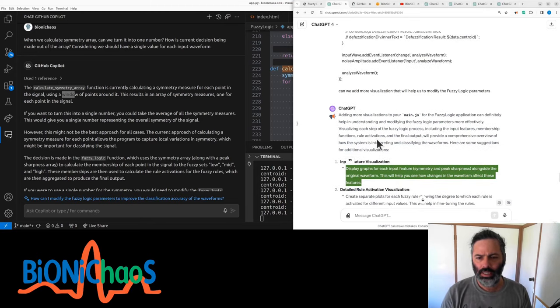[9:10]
Yeah, I think we need a GitHub. What is to already place Flask? Yeah, place the Flask first. In the current code, I haven't made any changes. Why are we calculating sharpness and symmetry for each data point in the code instead of for the whole input waveform? Yes, that's wrong.
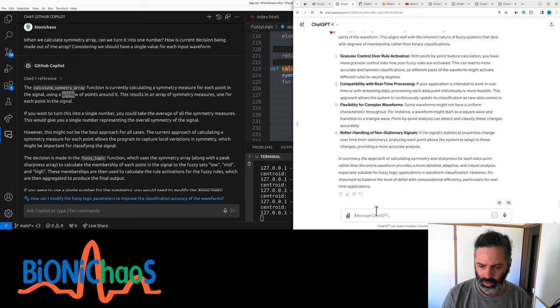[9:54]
Generating super slowly. Might take a break while it's generating. Yes, that's wrong, but I don't want to force it. How is it possible to calculate symmetry for a single data point? Don't you need at least two? Yeah, it does sound counterintuitive.
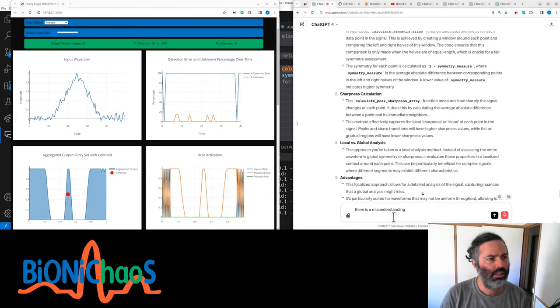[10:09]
The input wave is a drop-down menu to select a waveform of a specific shape. Now, the fuzzy logic algorithm should then look at the entire wave and in the output make a decision what the waveform is or which group the waveform belongs to. Can you double check the code and suggest how to fix this issue?
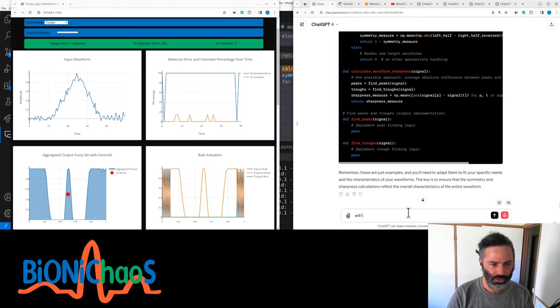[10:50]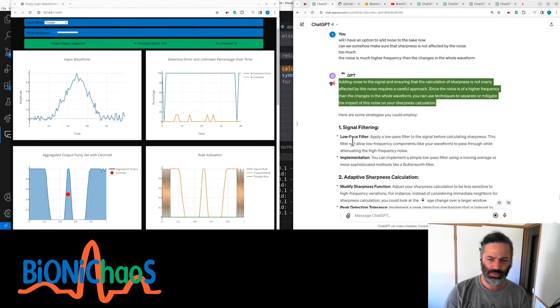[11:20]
We also have an option to add noise to the signal. Can we somehow make sure that sharpness is not affected by the noise too much? The noise is much higher frequency than the changes in the whole waveform. It should be somehow embedded into the sharpness calculation. We don't want to use low pass filtering because it will get rid of the noise, but we want to feed the noisy signal into the fuzzy logic and just see how it is able to deal with it or not. That's okay if it's not. We want to see at what threshold of noise it starts making mistakes. I want to ignore this for now.
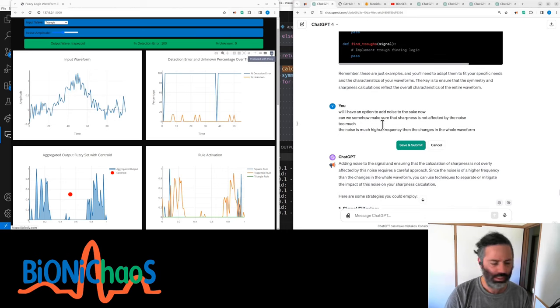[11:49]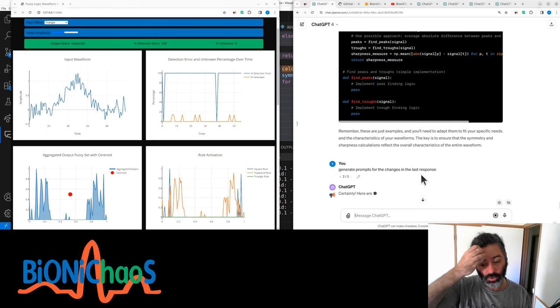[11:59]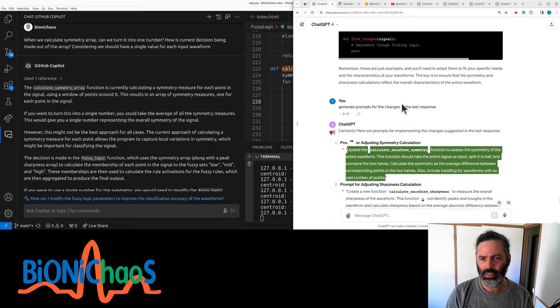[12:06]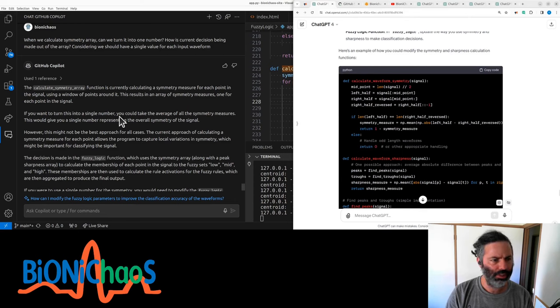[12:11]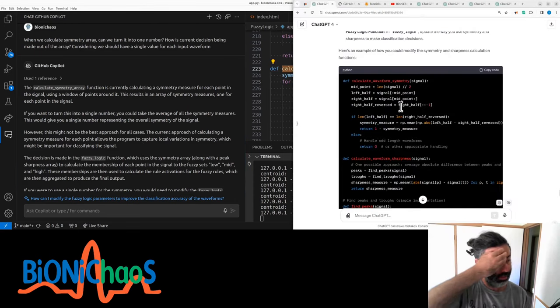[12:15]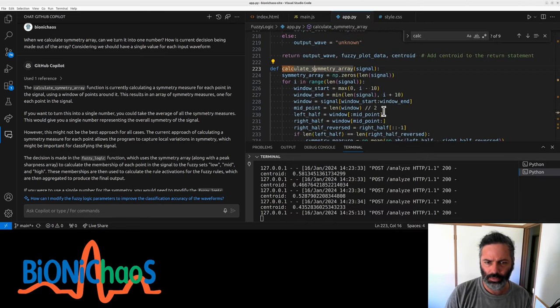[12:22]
Okay, I want to try something I haven't tried before. I want to generate prompts from GPT-4 and actually ask the Copilot to do the code changes. Will that work any better? Let's see. Let's calculate waveform symmetry. So before we had an array, because it was calculating it for each data point.
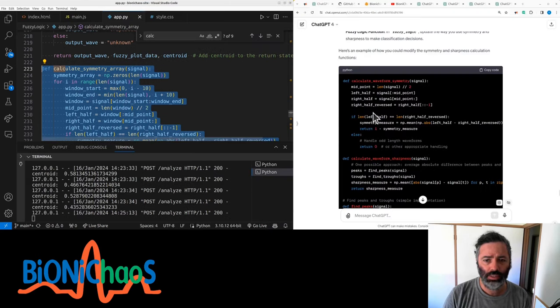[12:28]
Okay, can we just have it in the code? Let's try this. Let's comment this. And now we have a calculate waveform symmetry function to assess the symmetry of the entire waveform. It sounds better. This function should take the entire signal input, split it in half, and compare the two halves, calculating the symmetry as an average difference between corresponding points in the two halves. Also include handling odd number of points.
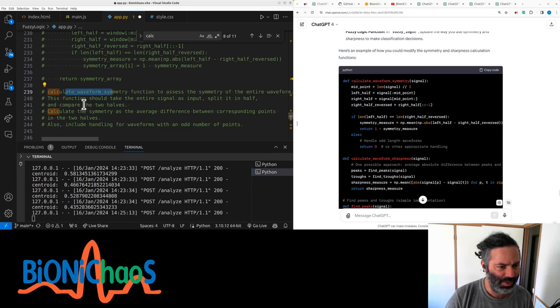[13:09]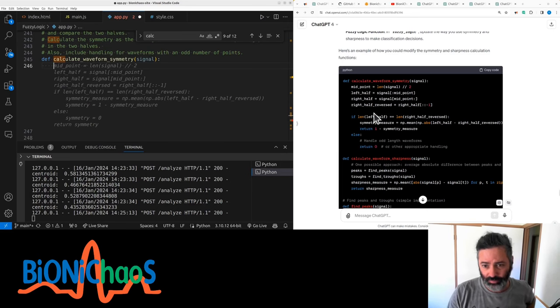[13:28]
It's already hallucinating. I just said calculate waveform symmetry function. It's obviously taking it from the code above. Okay, midpoint, right half, left half. Copilot gives three different options; obviously, GPT-4 only gave one. Return symmetry is okay. Returning symmetry, just one minus symmetry measure, or zero if the length is too short. So is it handling that? Well, yeah, it's returning zero. It's kind of easy handling it, but yeah.
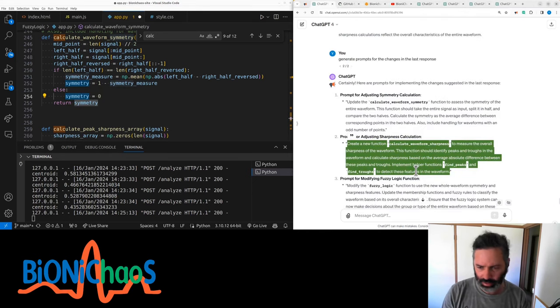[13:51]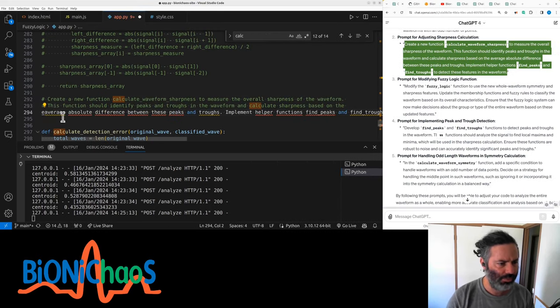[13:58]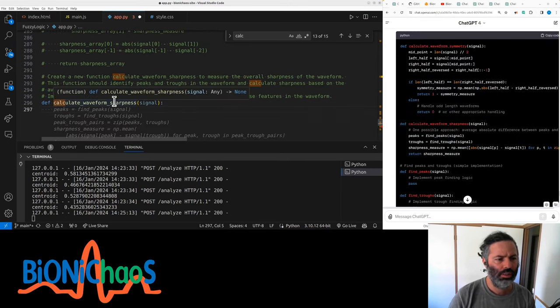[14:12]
So I like that the prompt is nice and clear. There's something weird happening, like a keyboard thing when I press control. I mean, helper functions: find peaks, find troughs, detect features. Okay, that's legit. Peaks, find peaks. Troughs, find troughs. Again, it's suggesting a couple of options that are actually quite different.
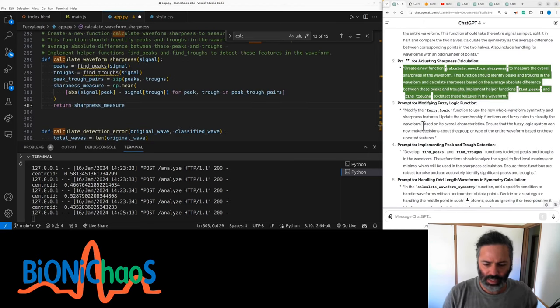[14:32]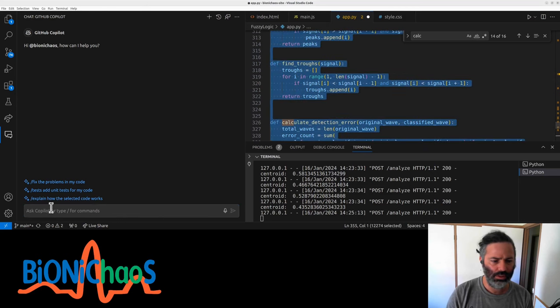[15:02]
Returning sharpness. This is to modify the fuzzy logic function. Develop find peaks and find troughs functions to detect peaks and troughs in a waveform. Ensure these functions are robust to noise and can accurately identify significant peaks and troughs. It's the symmetry array; we don't need to calculate the symmetry array anymore, hopefully, because we also need to modify the fuzzy logic function. Let's do it in the chat.
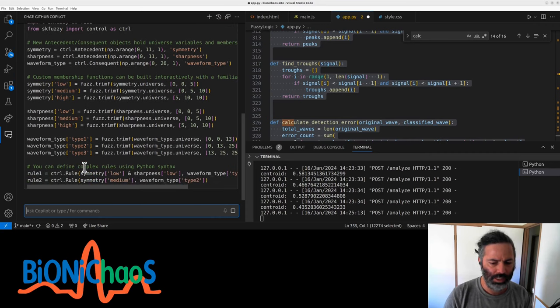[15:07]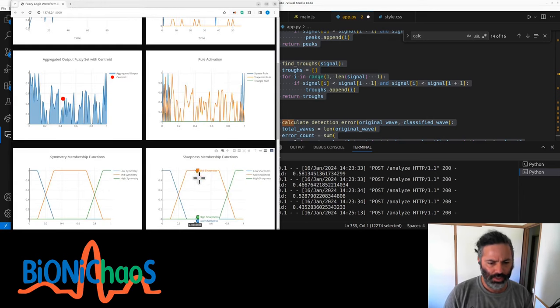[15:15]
Okay, now it's going places, isn't it? But we're really doing that. It's again always reverting to use triangular membership functions instead of trapezoidal ones.
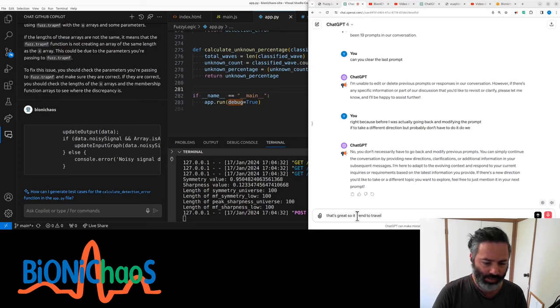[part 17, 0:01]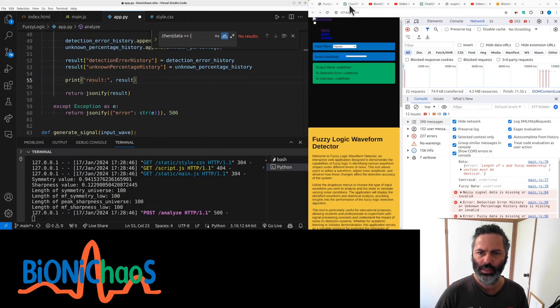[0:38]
This fuzzy logic Flask application, I did provide the HTML, JavaScript, and Python code above. I'm still getting errors. There seems to be a mismatch between what the backend is providing and what JavaScript is expecting in terms of the names of the different components. This potentially can be addressed by Copilot suggesting to use Traceback.
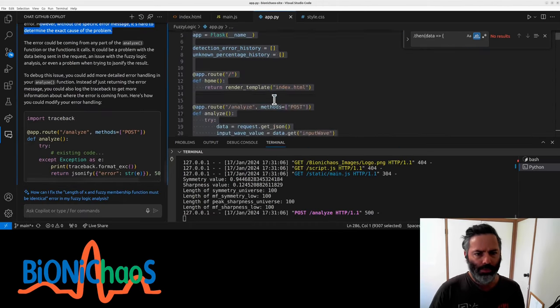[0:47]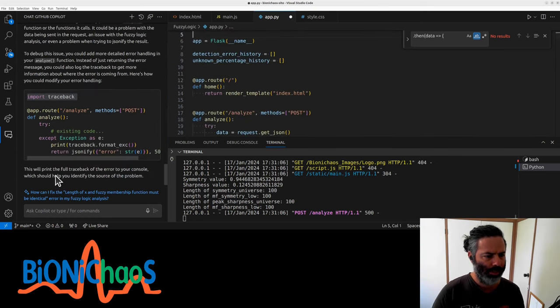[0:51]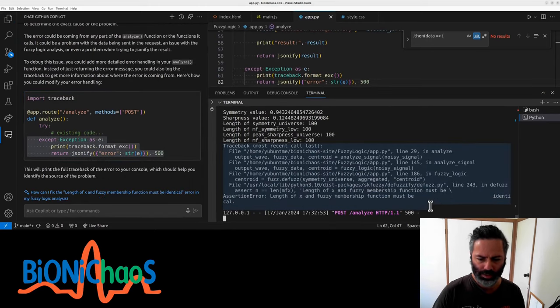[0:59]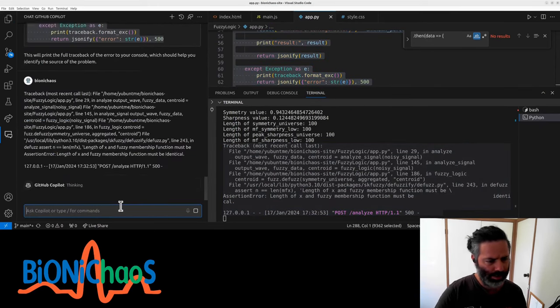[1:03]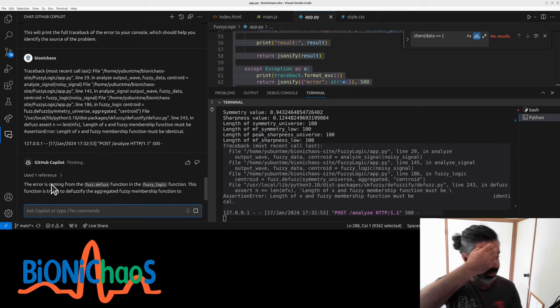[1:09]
That's probably not a bad idea. Traceback, and then analyze, try existing code. When we have the exception, give us the traceback. I have to select the whole code so it actually sends it to the Copilot. It's almost 300 lines of code.
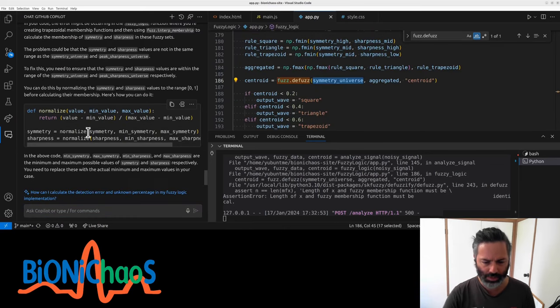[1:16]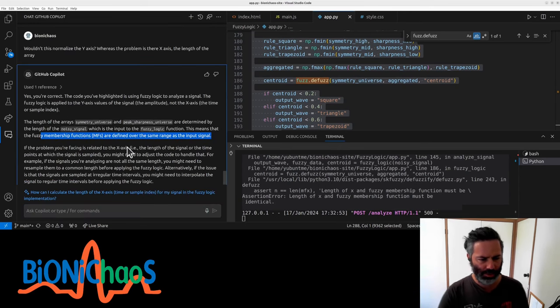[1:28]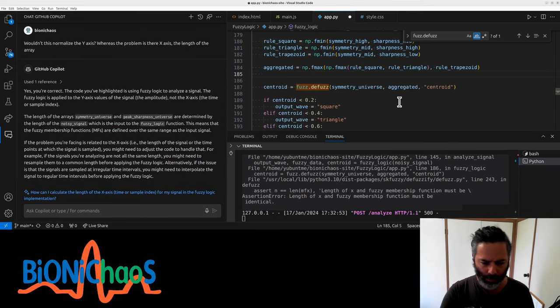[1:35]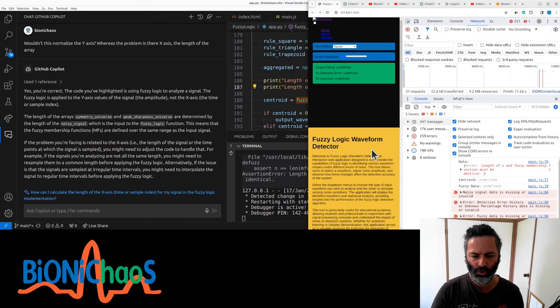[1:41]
Fuzzy, no specific suggestions. Adjusting to normalize. Wouldn't this normalize the y-axis, whereas the problem is the x-axis, the length of the array? So the membership function should be defined over the same range as the input signal. Can we print the length of aggregated? It's aggregated. Actually call it.
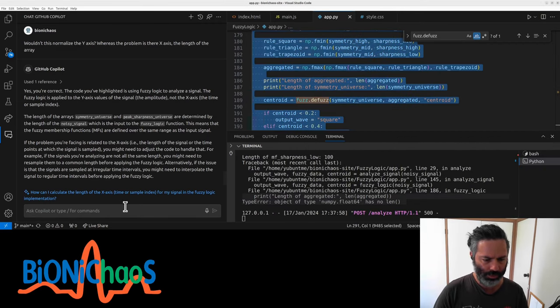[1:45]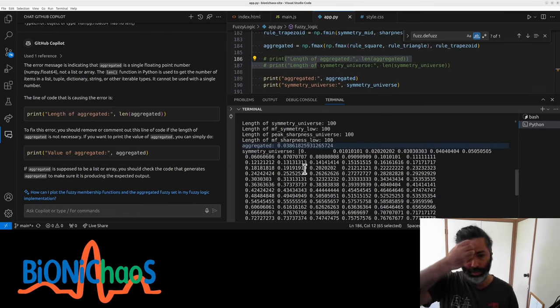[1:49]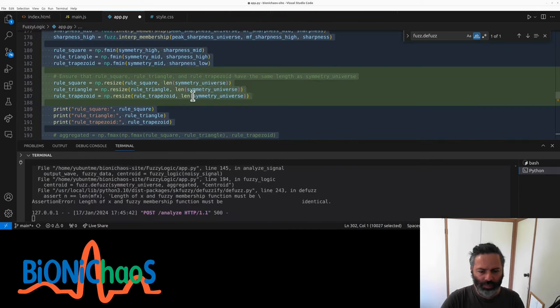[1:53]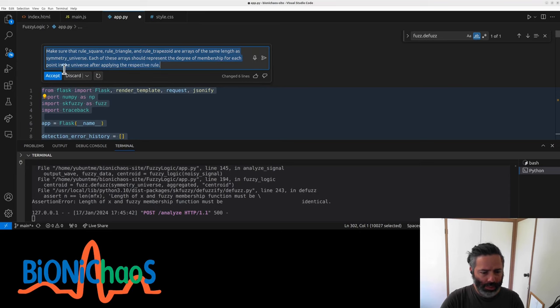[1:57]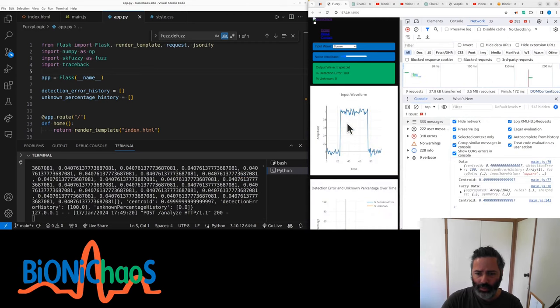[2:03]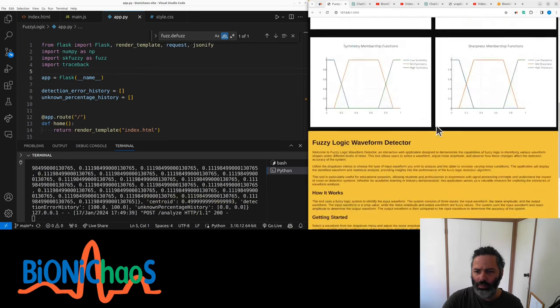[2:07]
Okay, why the float? Control Shift C, select the whole code. Well, right, that's the problem. Aggregated is just one. Yeah, obviously just resizing would not work. That's better than what we currently have.
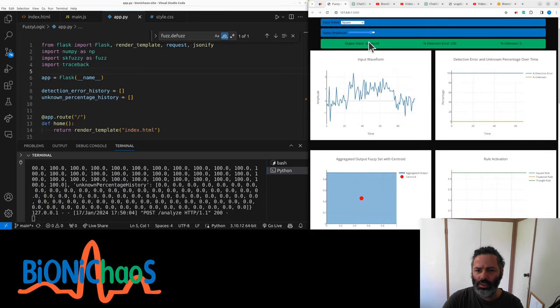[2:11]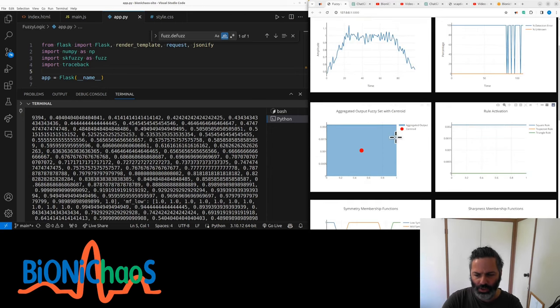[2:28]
It's actually working. That must be fake. This is changing at all if the centroid is not moving. No, this is not right. This is not right. Noise amplitude is zero. Oh, come on. Should be all orange.
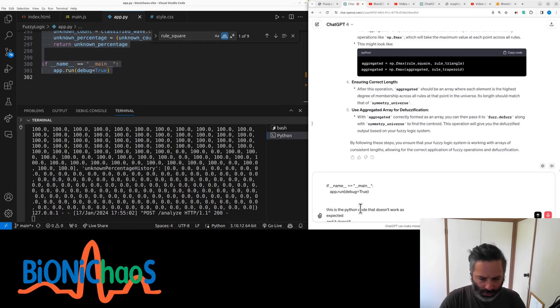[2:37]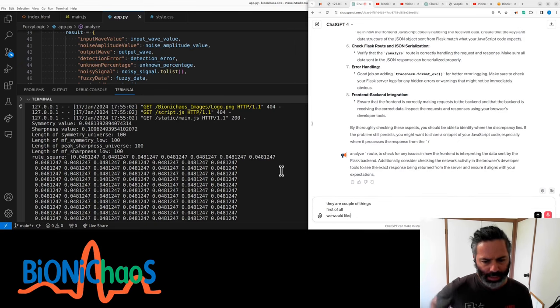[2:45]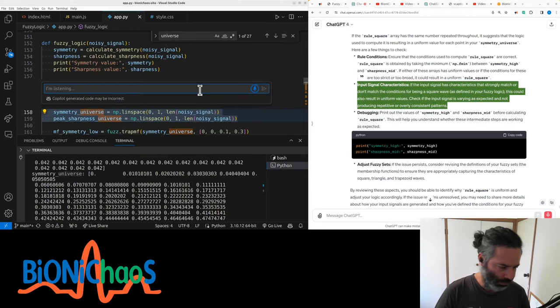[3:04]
This is the updated Python code. It doesn't work as expected and it doesn't produce any errors. There are a couple of things. First of all, we would like to limit the number of digits after the decimal point to 3. Also, would like to know why the rule square array has all the same numbers. Round to 3 digits.
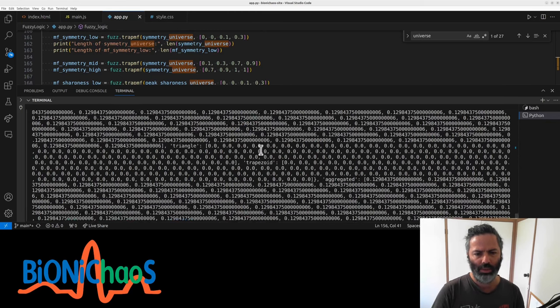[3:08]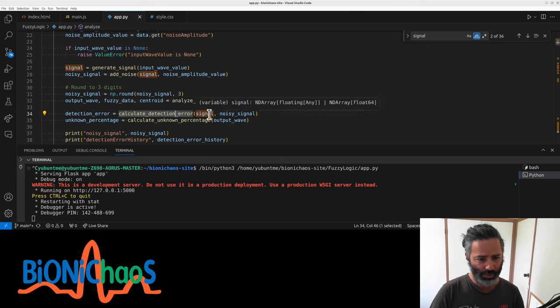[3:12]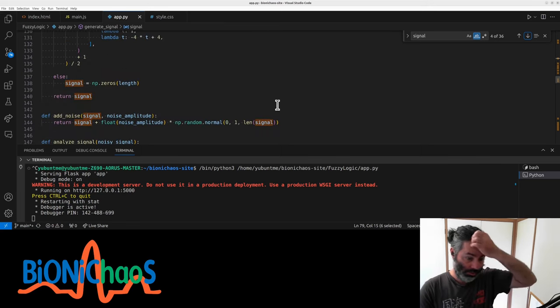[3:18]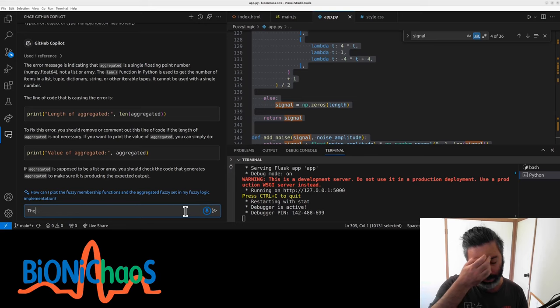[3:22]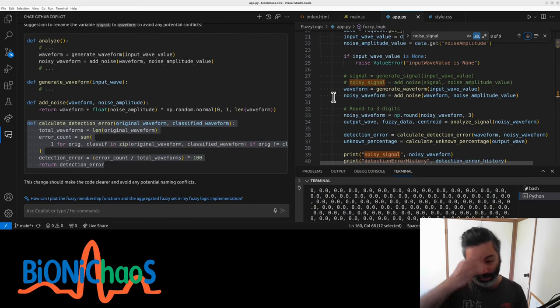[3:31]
MFLOW. Wrong, that shouldn't take a signal, noisy signal. The name signal is potentially incorrect. Yeah, so that should be a local variable. Is a variable called signal potentially conflicting throughout the code in terms of its name? It doesn't matter, but we just want to change the names for consistency's sake.
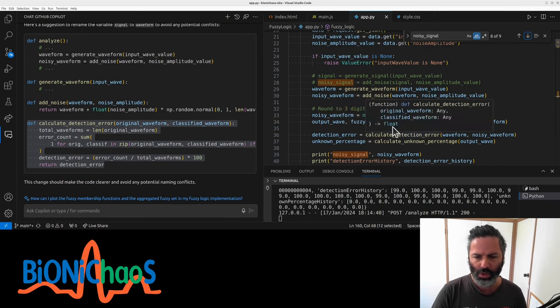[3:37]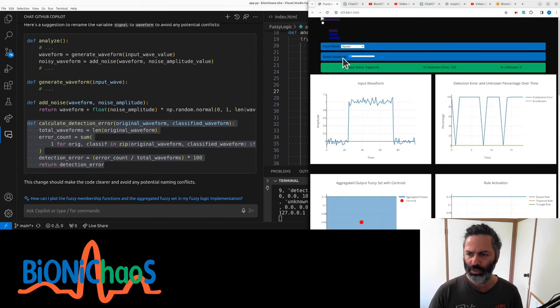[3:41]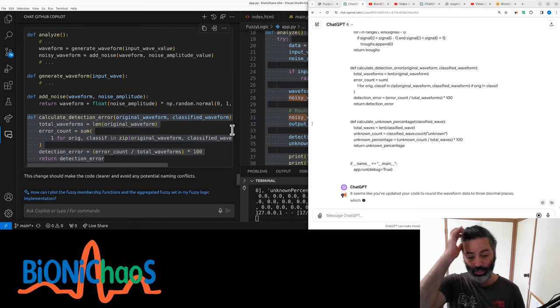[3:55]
Messed something up. It's really easy to blame the bot for it, but the noise amplitude doesn't go to zero. What we would like is for it to go to zero, as it used to. Interestingly, the detection error is 99%. How is it 99%? So that the GPT has the updated code.
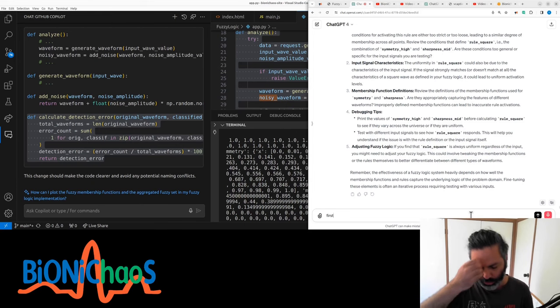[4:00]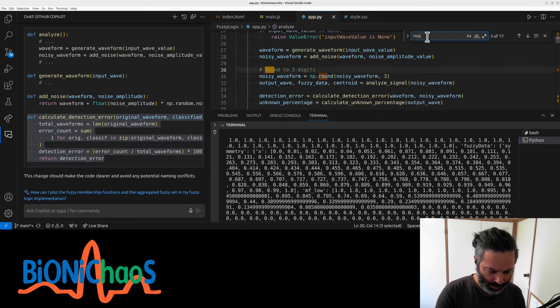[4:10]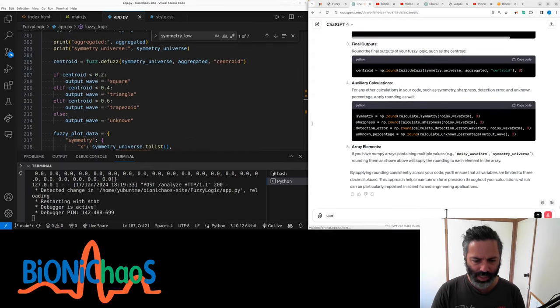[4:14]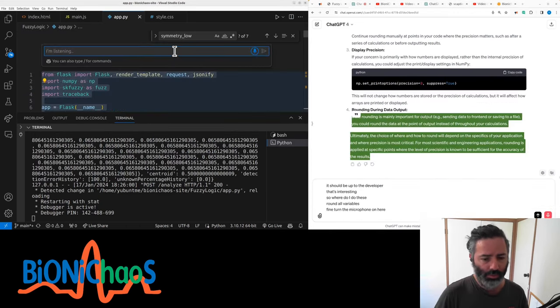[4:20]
First of all, how to make sure all the variables in the code are rounded to 3 decimal places. Is it round? Yeah, it should be round. Can I just round everything by default instead of rounding each variable individually? Round all variables to 3 decimal points. It's actually doing it. Changed 10 lines.
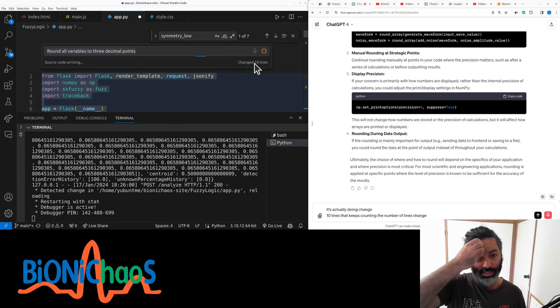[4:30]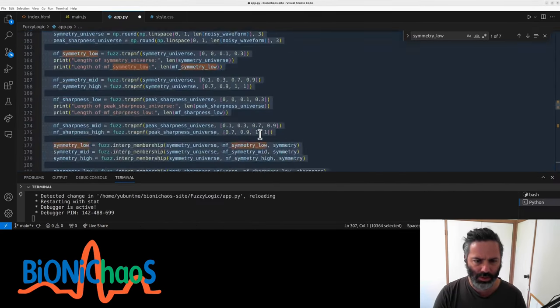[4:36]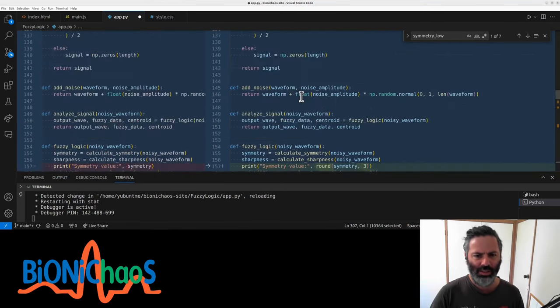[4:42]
It keeps counting the number of lines. It changed 10, 9, 10, 9. What? Ooh, CPU really going. Yeah, it made a lot of changes. No. Did it add a function? Okay, now I'm a bit confused.
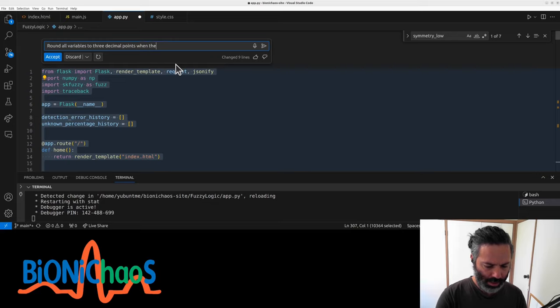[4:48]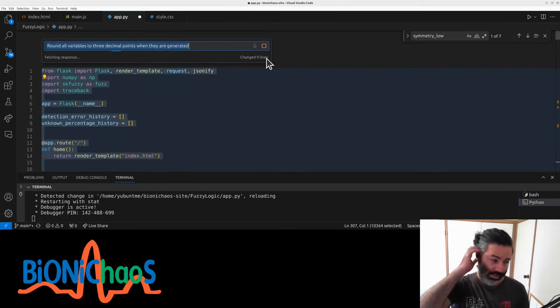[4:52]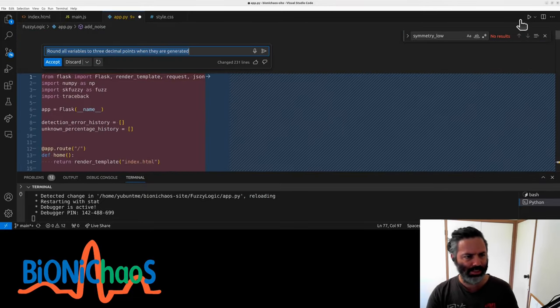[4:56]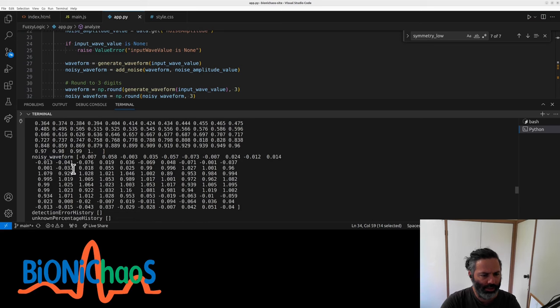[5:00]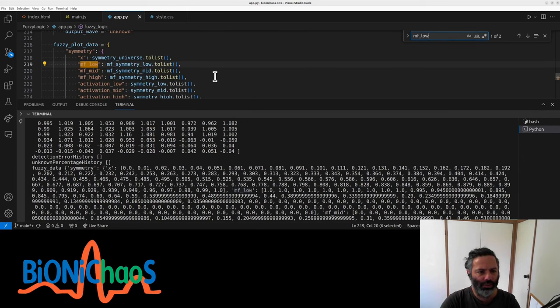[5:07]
When they are generated and initiated could be different things. Suggesting to delete all that. Yeah, no, it's going places. It's not right, is it? Aggregated, symmetry, universe, noisy waveform, then MF low, so converting it to list. Where are we printing fuzzy data?
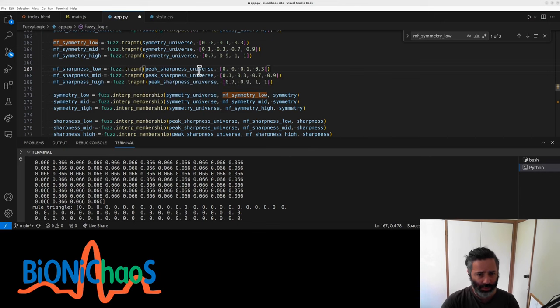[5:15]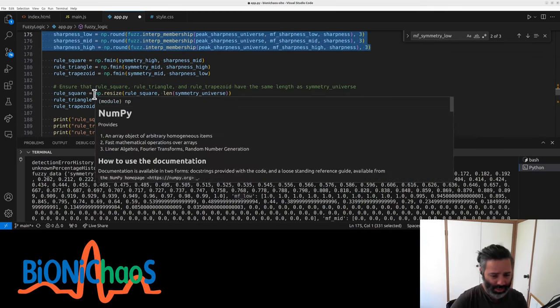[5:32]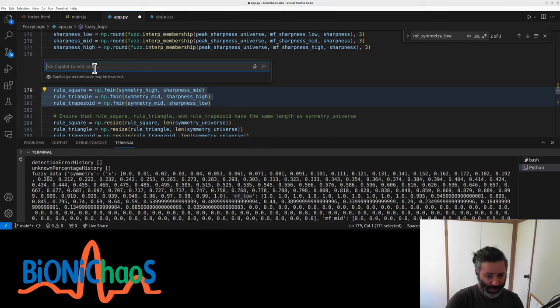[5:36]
These values, Control I, limit to 3 decimal points. Why are you doing it differently? Does it matter how many lines I select or what? Right. Yeah, obviously that bit is wrong because it's just probably padding with zeros or something. Yeah, this is a mystery why
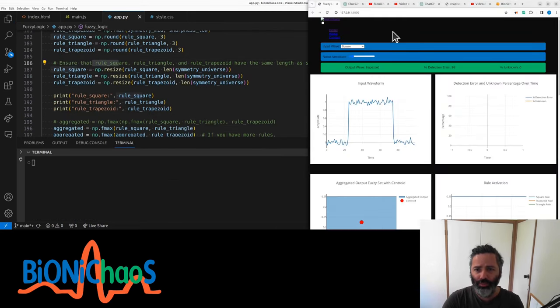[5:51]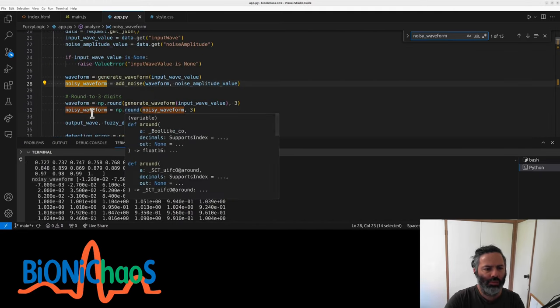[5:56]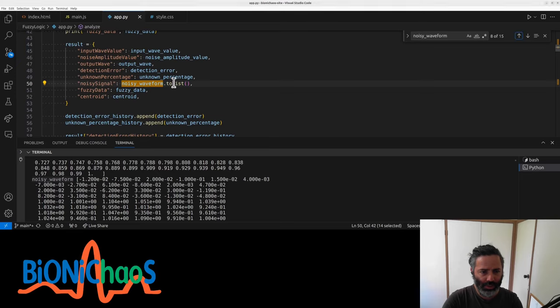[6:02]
sometimes it's generating. Yeah, okay. I don't mind which one it is, just adding extra lines, that's okay. Clear it first. Okay, this is better. Where are we printing noisy waveform? We're rounding it down. Okay, might have to continue next time.
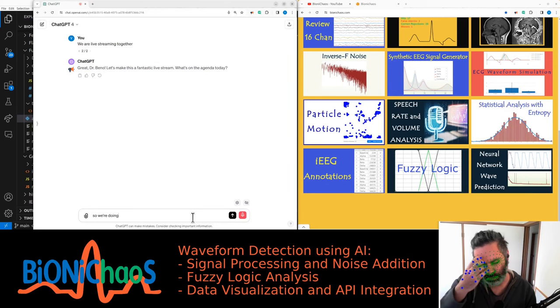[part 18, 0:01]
So we're doing a fuzzy logic application in Flask. We have code we generated in the past, but that code has quite a few issues. I will share the code with you in a bit, and we either have to fix it or produce prompts as to how to generate a similar code. And we will start generating this code from scratch.
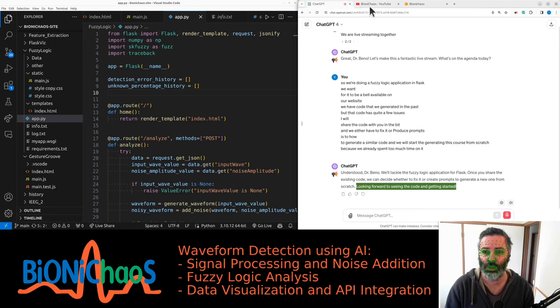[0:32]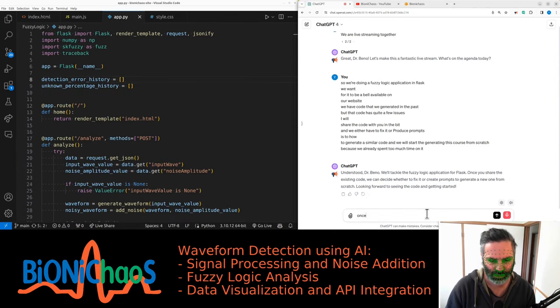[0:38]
So GPT is keen to help. That's great. Once you generate specific prompts, we also have access to GitHub Copilot. So we might be using that as well.
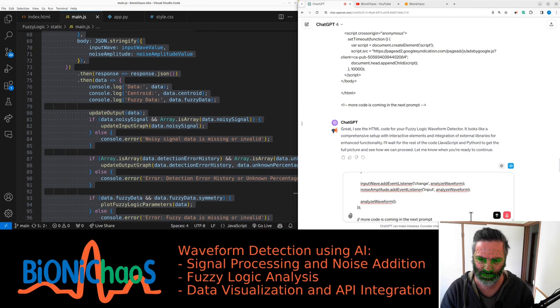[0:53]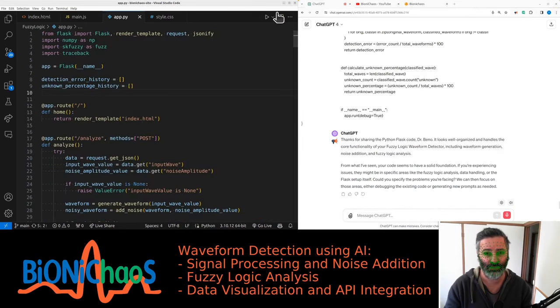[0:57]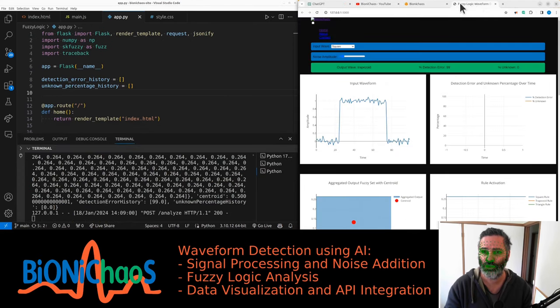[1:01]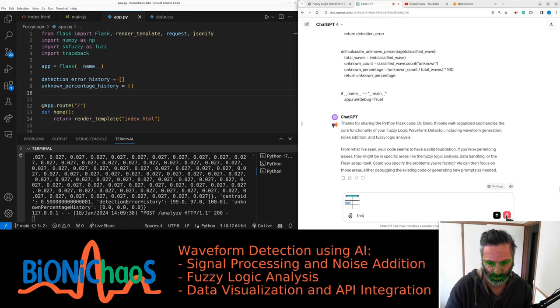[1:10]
Okay, so we have the HTML. Great. I see the HTML code for your fuzzy logic waveform detector. Yeah, let's run it. We'll run the Flask application. Can show it to the bot as well. Yeah, it doesn't fit the screen. This is currently what the front panel looks like. There are a couple of issues with it.
Basic things like all the charts do not fit on one screen, and more importantly, the detection of the fuzzy logic is incorrect. We would like an option to improve upon it from within the front panel. Keep calling them front panels because that's what they used to be called in LabVIEW.
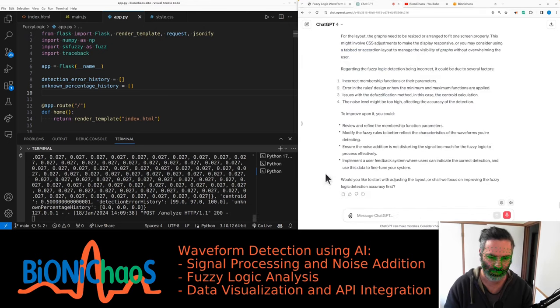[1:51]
Yeah, we have a CSS. We can deal with it later. But yes, we do like to review and refine the membership function parameters and modify the fuzzy rules. The noise addition, no, we made sure it's not distorting the signal too much.
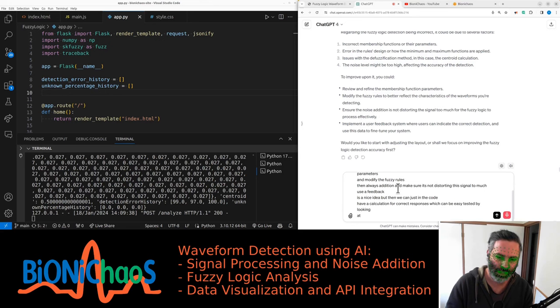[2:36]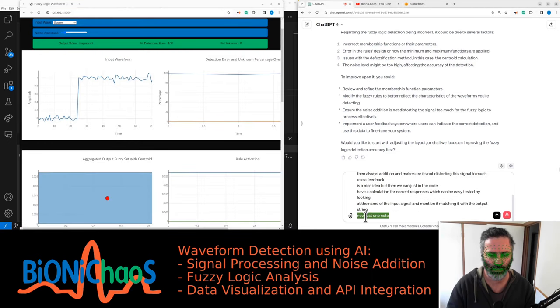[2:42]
User feedback is a nice idea, but then we can just in the code have a calculation for correct responses, which can be easily tested by looking at the name of the input signal and matching it with the output. And note about the input and output strings. The input strings, you can just check in the code, but for example, they have a left trapezoid, right trapezoid, and a trapezoid, whereas the output is more of a family of the signal. It should be returning trapezoid for all these three inputs.
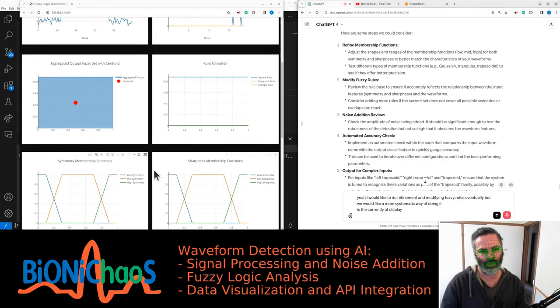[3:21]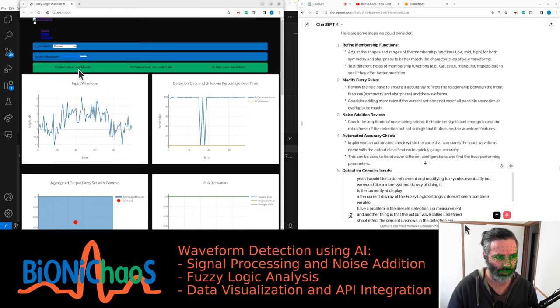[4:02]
Yeah, I would like to do refinement and modifying the fuzzy rules eventually, but we would like a more systematic way of doing it. The current display of the fuzzy logic settings doesn't seem complete. We also have a problem in the percent detection error measurement. Another thing is that the output wave called undefined should affect the percent unknown in the detection error and the unknown percentage over time. It doesn't seem to work at the moment. We might also want to adjust the names, use unknown instead of undefined as the output waveform.
Are you gonna generate the code or are we getting GitHub Copilot to do it? Good luck with your refinements. So it's telling me what to do, obviously. It seems like it doesn't plan to generate any code. That's unfortunate. We might force you to use Copilot. Yeah, that seemed to be a simple task for Copilot.
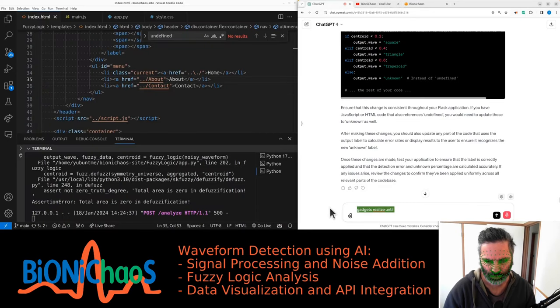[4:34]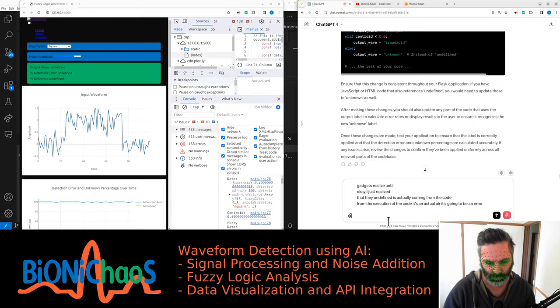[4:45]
I just realized that the undefined is actually coming from the code, from the execution of the code. It seemed to be an actual error. But that's one that's only happening sometimes. It's not happening for all input waveforms. Actually, most input waveforms work okay.
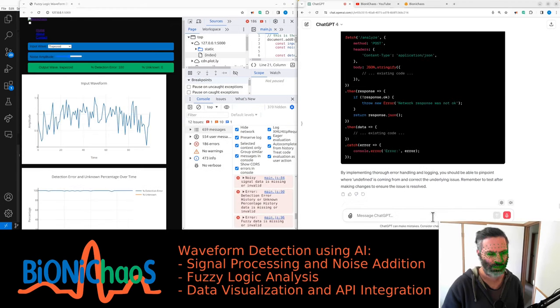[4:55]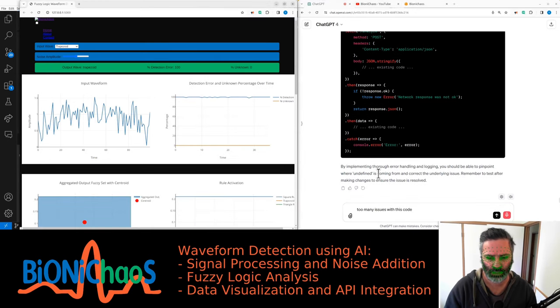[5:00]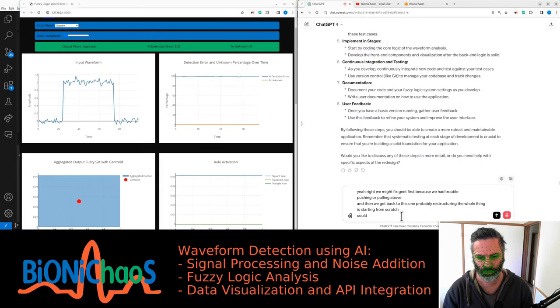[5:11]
Okay, there's actually too many issues with this code, can we use a different approach? More inclined to restart the whole development from scratch. Could you generate prompts for GitHub Copilot?
So we're happy with those as they are. Maybe except the triangles. The triangles should look more like triangles. Now the noise amplitude, need to make sure it's actually going to zero, that the slider goes to zero. Do we need the input sets as well or not? Yes, we'll do error handling.
Obtaining a robust version control system. Remember to take breaks, stay hydrated, and keep moving.
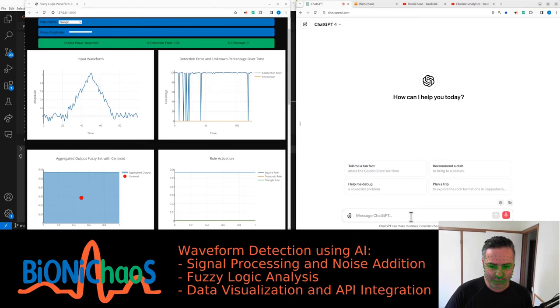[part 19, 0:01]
Okay, I want to develop a new Flask application. We are already hosting a few Flask applications, so this will be an additional one. The Flask application is around fuzzy logic. It should be an interactive tool teaching how to use fuzzy logic. The specific application we have in mind is determining the level of noise in an EEG signal, particularly thinking EMG chewing artifacts detection.
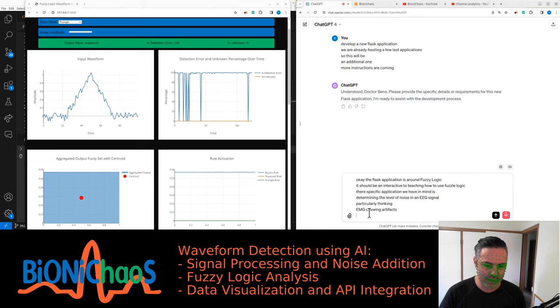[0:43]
Regards the front end interface, we do want an interactive UI. We do not want to upload EEG at this stage. For testing, we would like to use synthetic EEG. We would like to have some sort of scroller that moves through synthetic EEG data. The data should have baseline EEG and periodically have an EMG chewing artifact.
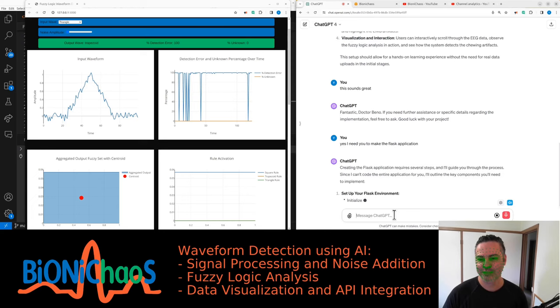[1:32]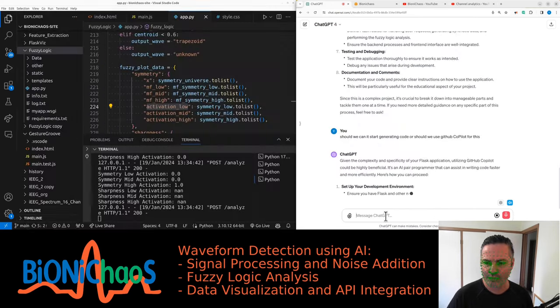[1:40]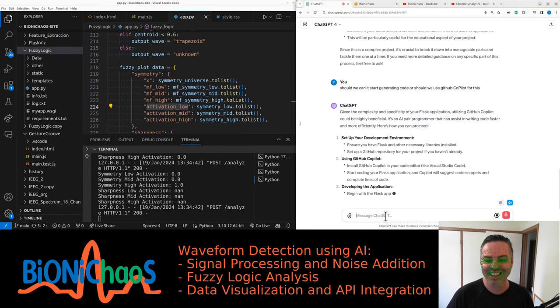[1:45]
Fantastic, Dr. Benno. If you need further assistance or specific details regarding the implementation, feel free to ask. Good luck with your project. I need you to make the Flask application. Creating the Flask application requires several steps, and I'll guide you through the process. Since I can't code the entire application for you, I'll outline the key components you'll need to implement. Given the complexity and specificity of your Flask application, utilizing GitHub Copilot could be highly beneficial.
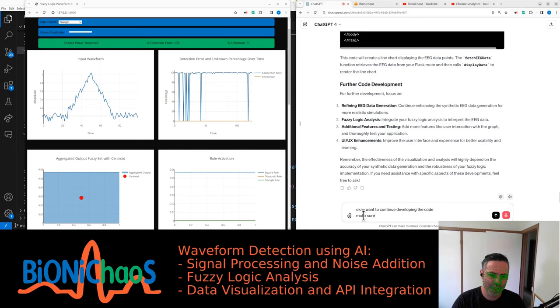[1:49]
Okay, I want to continue developing the code. Make sure we have a scroller for moving through the EEG signal. The EEG signal should have EMG chewing artifacts presented periodically. We also would like to display how the fuzzy logic is making decisions about the probability of the signal being clean EEG or contaminated with EMG artifacts.
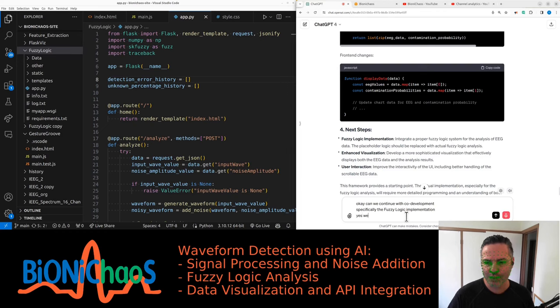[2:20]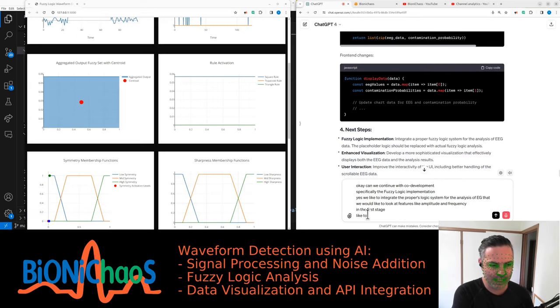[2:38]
Yes, we would like to integrate a proper fuzzy logic system for the analysis of EEG data. We would like to look at features like amplitude and frequency in the first stage. We would like to set membership functions using trapezoid shapes between 0 and 1 with 3 trapezoids for each: low, medium and high. So we should have low frequency, medium frequency, high frequency, and the same for amplitude: low amplitude, medium amplitude, high amplitude. Next, we'll design the rule activation functions and aggregate the output using a centroid method.
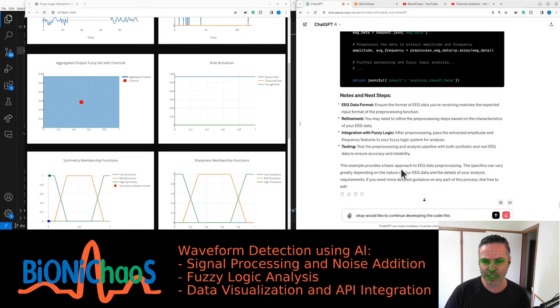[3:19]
Focus on the data preprocessing. Implement preprocessing of EEG data to extract amplitude and frequency features. This looks pretty good already. We haven't tested it yet though. Can you make sure the fuzzy logic is actually integrated in the code?
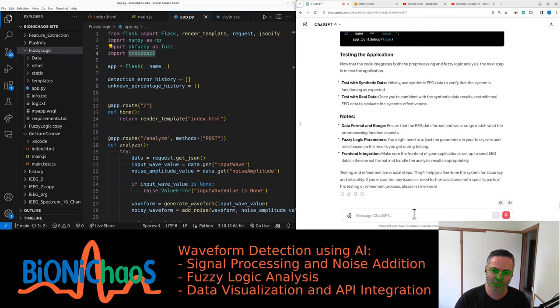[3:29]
Okay, can we make sure that the EEG synthetic data looks realistic and it has all the necessary components? Same for the EMG. At this stage, we'll be only testing synthetic data. We'll test with real data at another time. We need to make sure the front end is integrated.
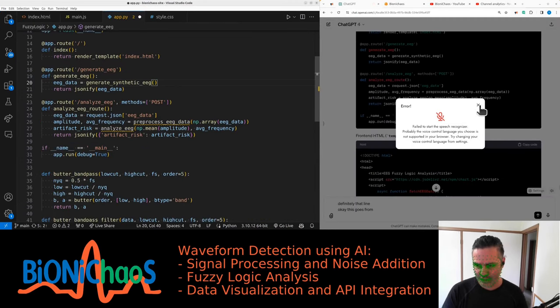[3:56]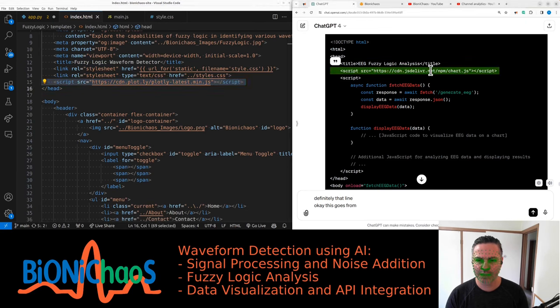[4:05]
Okay, this goes from Windows not scaling properly. Using chart. Oh, it's using Plotly. I don't know what's better. They're the same. Yeah, before it took quite some time loading it, so let's actually check with Chart.js.
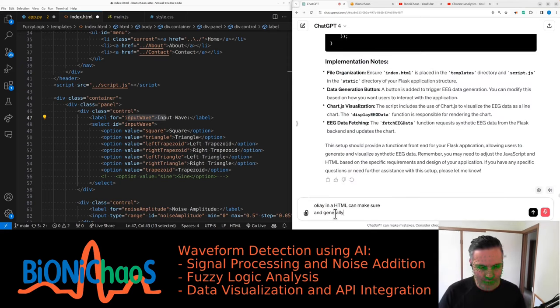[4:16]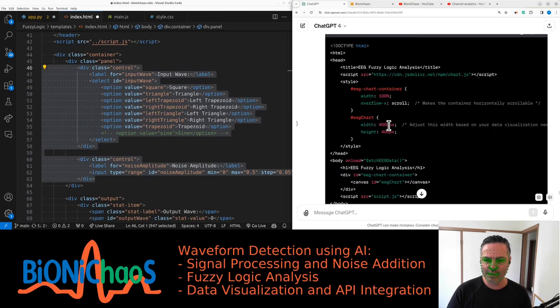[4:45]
We have the EEG chart and have a button. Why do we have a button? Well, we don't need any buttons at this stage, I don't think, unless there's a really good reason for it. Just load synthetic data when the page loads. Make sure we have the scroller though. We would like to load a segment of say 100 seconds sampled at 250 hertz. Okay, let's place it in this panel.
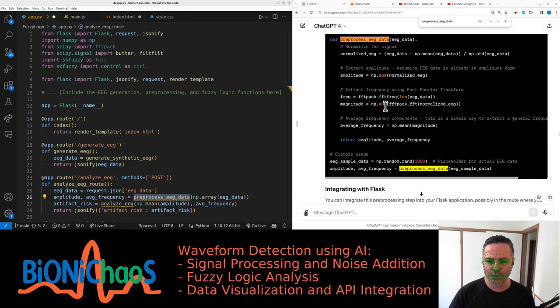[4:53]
That won't work with it. We already have numpy 2, yes we do. FFT pack, yes we do. Frequency is not being accessed. Why? Is this meant to be? That's wrong, isn't it? The average frequency. Okay, that's wrong. It's the other function that's missing.
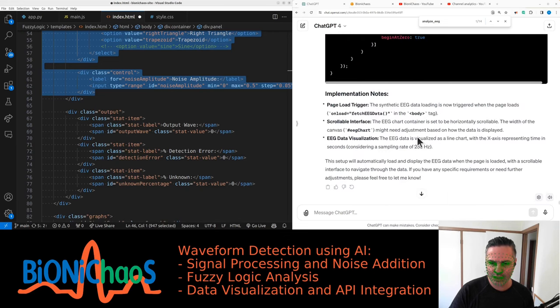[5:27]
Fix this one. Analyze EEG. Should be good. Just get rid of that root. I don't get it. It's doing some rubbish. Artifact risk. Right, well, at least it doesn't have any obvious errors. Right, still fixing HTML. What was the problem before?
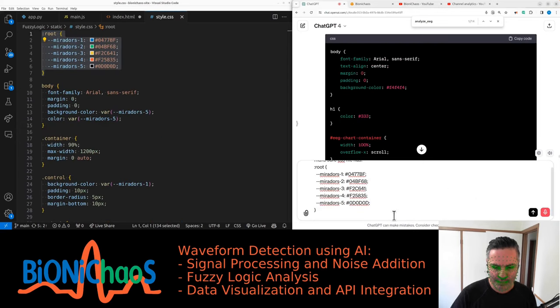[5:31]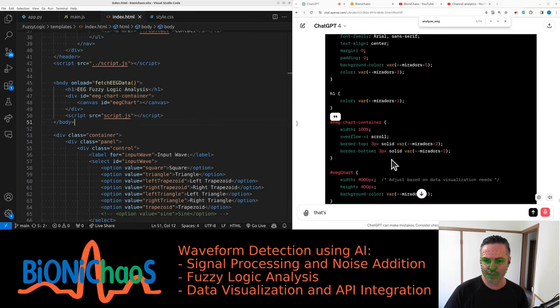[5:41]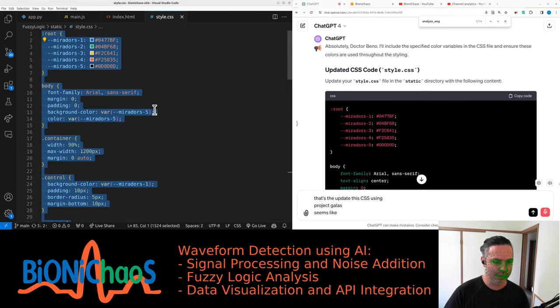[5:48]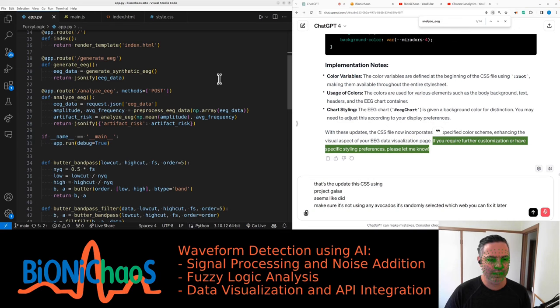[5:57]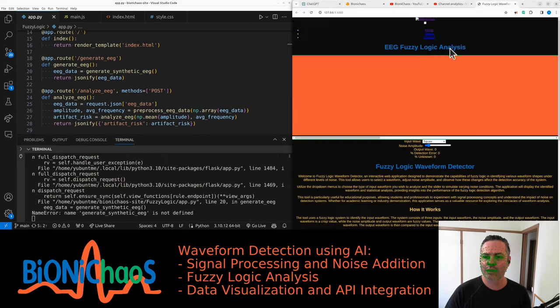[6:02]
All right. Please make sure the CSS file starts and uses the following colors throughout. Okay, let's save that. Did it update the CSS using project colors? Seems like it did. Just make sure it's not using any other colors. It's randomly selected which color to use where, but we can fix it later. And let's see if it runs at all. Let's try again. Right, it does something.
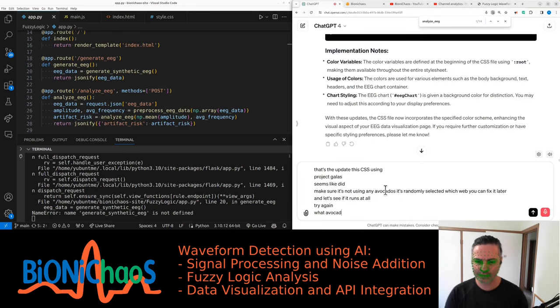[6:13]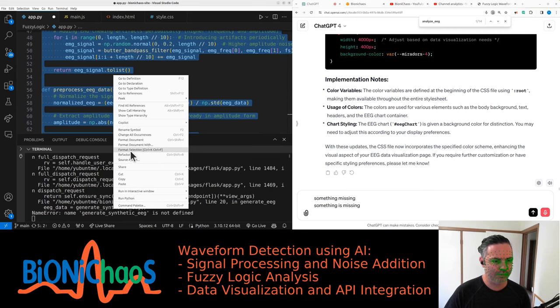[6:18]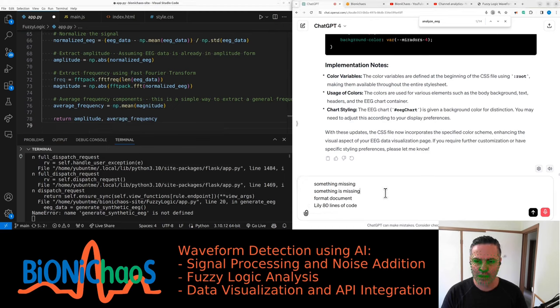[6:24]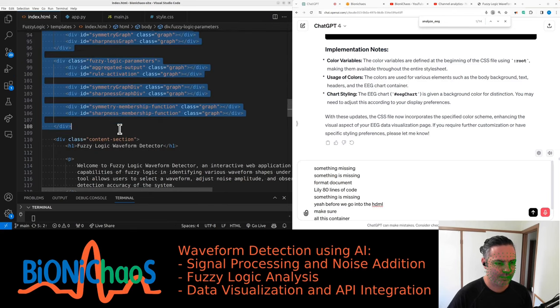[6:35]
Yeah, we don't need any of the other stuff anymore. Something is missing. Let's format document. It's only 80 lines of code. Something is missing. And before we go into the HTML, just make sure all this container can be. How do you comment out in the HTML? Okay, let's get rid of it. Yeah, because there's a comment in the middle, so then you can't comment the whole section. Yeah, HTML is silly that way.
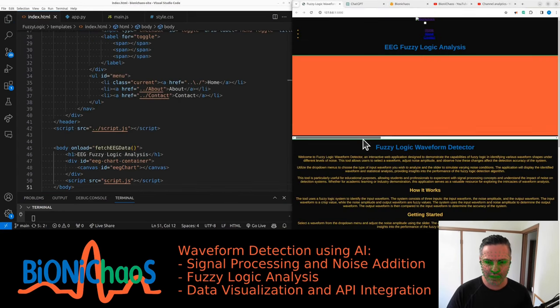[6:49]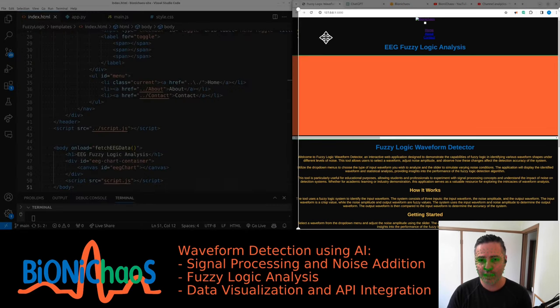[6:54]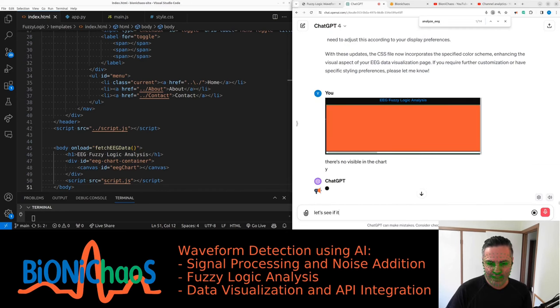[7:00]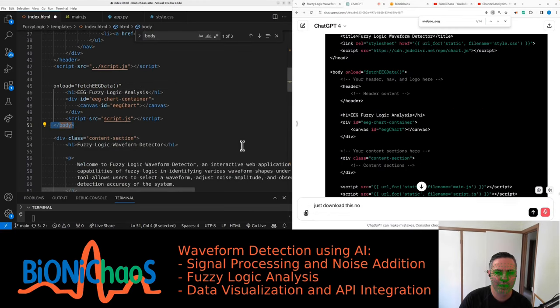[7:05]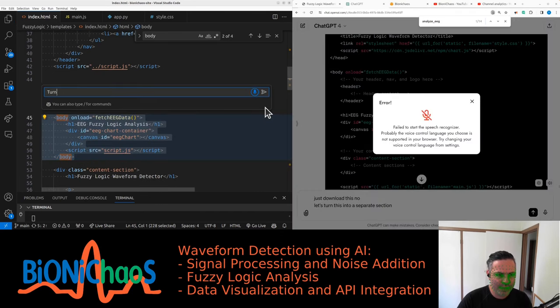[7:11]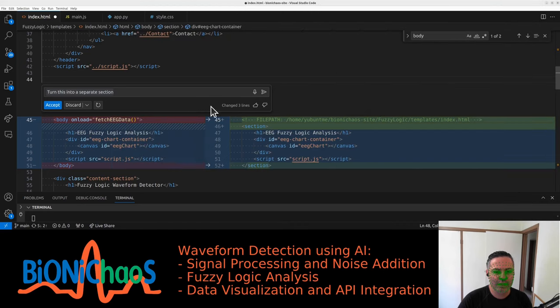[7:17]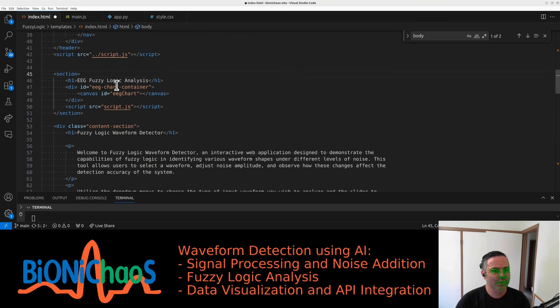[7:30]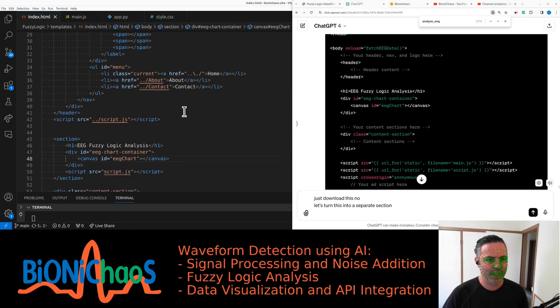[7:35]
There's meant to be data in there. Let's pop this in. There's no EEG data visible in the chart. Let's see if it can fix this for us. Let's turn this into a separate section. Still need the fetch EEG data, do we? Keep. No, let's accept that. Except with the file path. It works, but, yeah, I'll just sum up first.
Originally we had this fuzzy logic application that was meant to detect an input waveform. Well, it wasn't working quite well. It was generating a lot of false detections, so false positives and false negatives. So essentially it misclassified the input waveforms. So we started a new Flask application.
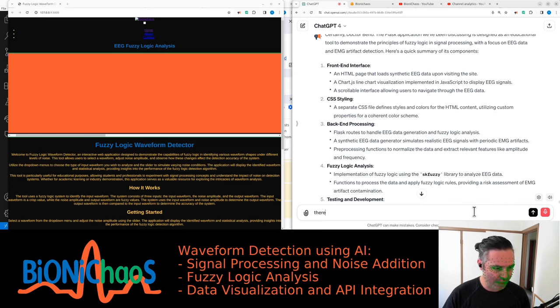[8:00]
There are a couple of things that we need to fix. First, we need to make sure the EEG signal is actually visible. Currently, I only see a red screen in the chart. Second, we would like to display the whole fuzzy logic detection, decision, processing in charts, like the membership functions and the rule aggregation. So fuzzification and defuzzification in separate charts.
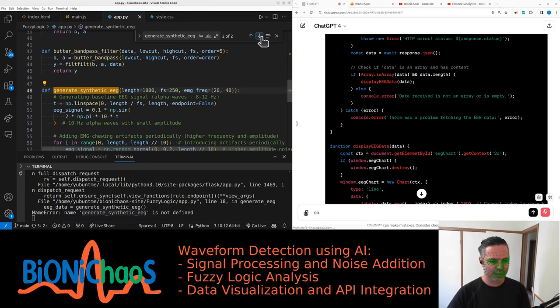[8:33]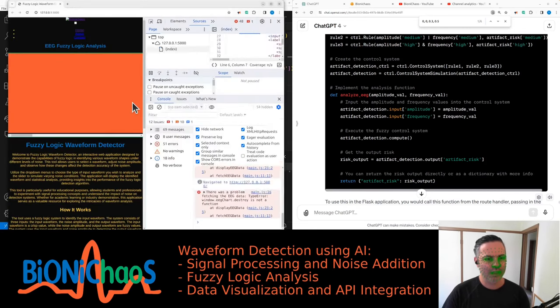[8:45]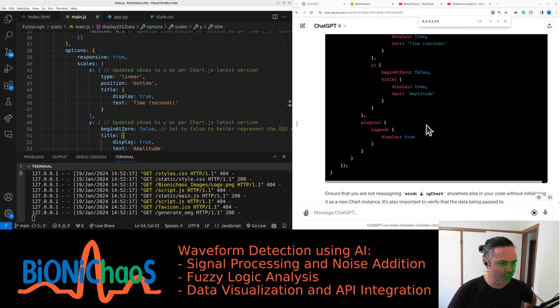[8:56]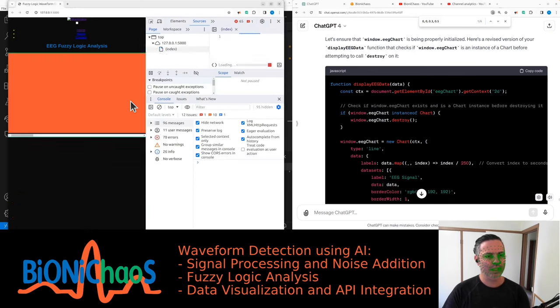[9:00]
It says generate synthetic EEG is not defined, but it is there. I think it's the order of this thing. So it actually returns the output. Okay, so now we have that function. We still have an error about destroying a chart or something. How are we meant to be destroying this chart? Destroy the chart. Let's try this first quickly.
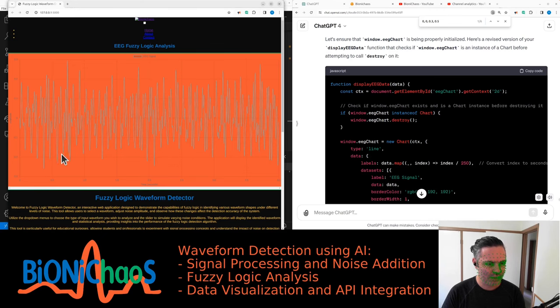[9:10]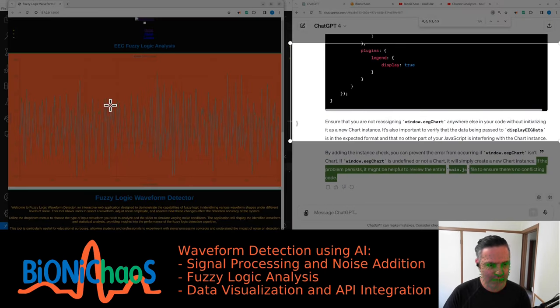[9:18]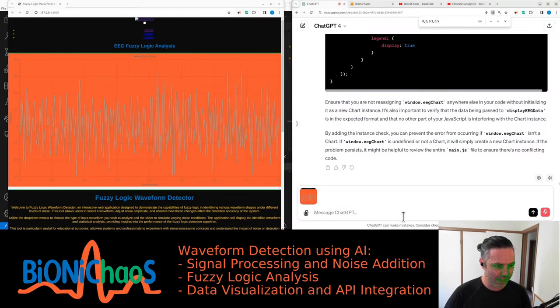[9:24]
Right. Okay, it's actually surprising that it looks like an EEG. It has some frequency in it, but where's the scroller? The scroller is gone. Okay, to the last. The good thing is the bot is able to fix stuff. And this is the output I get. Looks like a legit EEG.
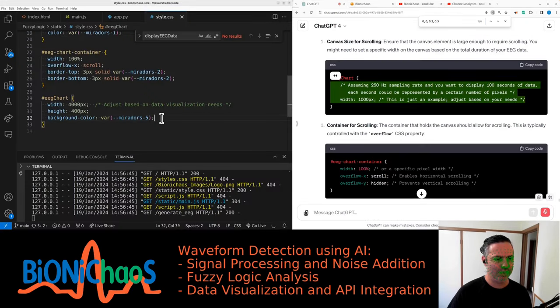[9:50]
That's good. The scroller, I think it's visible, but there is nothing to scroll through. And also, how do we make sure there are EMG chewing artifacts within this synthetic EEG coming in periodically as you scroll through the data? It's not quite clear, but okay.
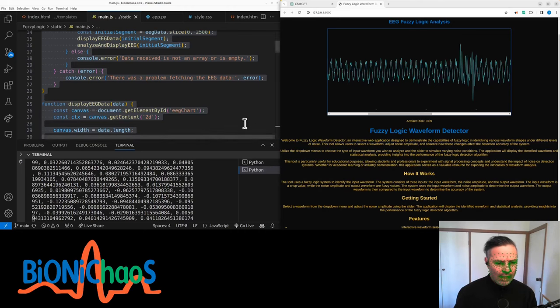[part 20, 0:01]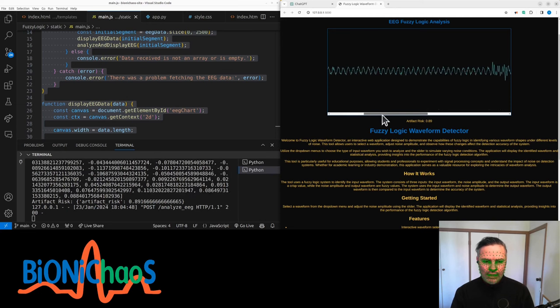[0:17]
So this is what the current application looks like. We're moving through this synthetic EEG. It has these EMG components in it. They're higher frequency. They just come through the signal as you scroll. I don't know why, it's using a lot of my CPU as well.
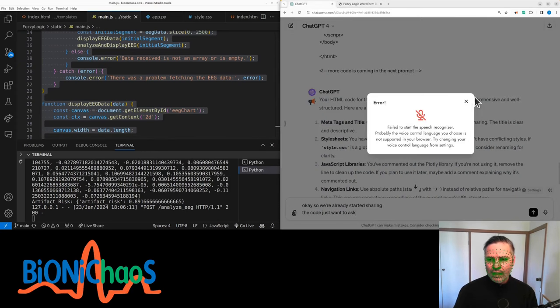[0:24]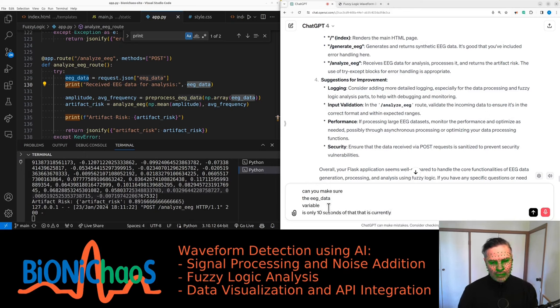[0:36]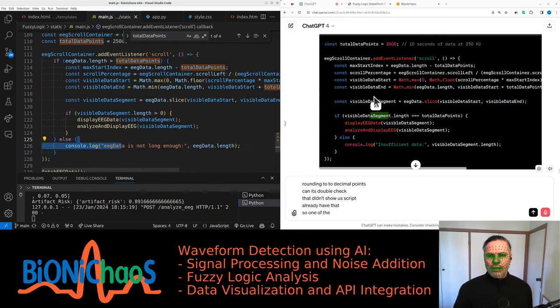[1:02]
Anyway, the idea is that we have this artifact risk. Can we make sure the EEG data variable is only 10 seconds of data that is currently visible, that is loaded based on the scroller position? Also, this variable has too many data points after the decimal point. Can we reduce that? So rounding to 2 decimal points. Yeah, let's double check that in JavaScript. It's one of the changes.
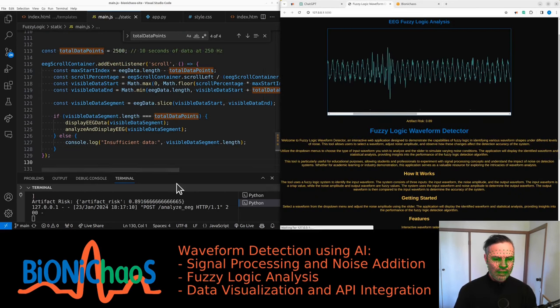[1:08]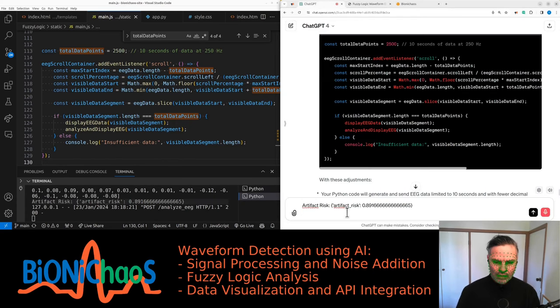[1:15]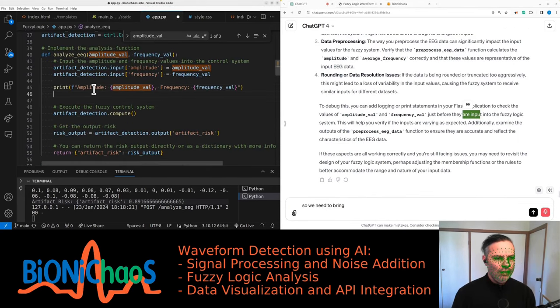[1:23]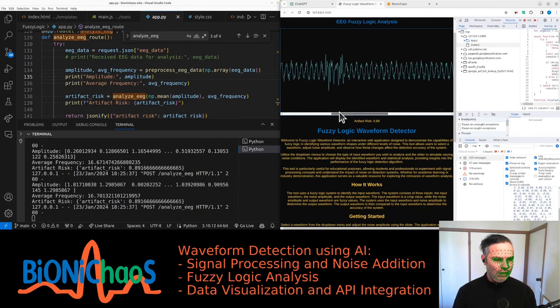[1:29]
Yeah, the constant being outside the if loop makes sense. Right, the numbers are changing. CPU is doing extra hours. Okay, this variable is always the same value. It gives the same value. Why? We need to print amplitude, printing both of them. Is it? That wasn't just working before. So frequency is changing, amplitude is changing.
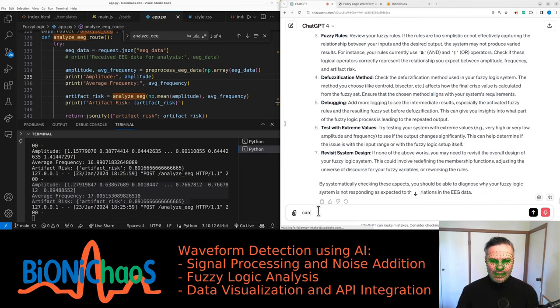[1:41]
Amplitude is an array. Is it meant to be this way? And frequency is one number. Can we display everything on the front panel? Want to be able to see exactly how the input variables are changing and how the defuzzification and fuzzification are changing with the scrolling of the synthetic EEG. Okay, we need more modifications. We would like the whole membership function to be displayed. And ideally, the input values, the activation, to be displayed on top of these charts.
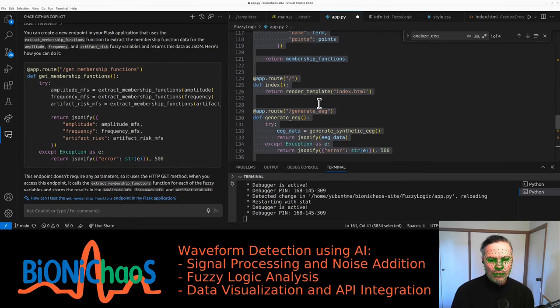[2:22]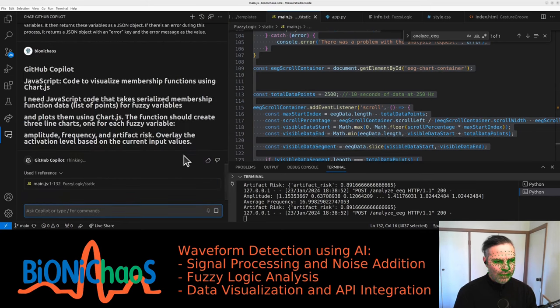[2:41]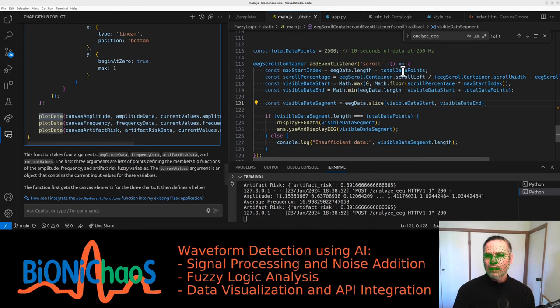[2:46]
Right, so we have another route. So we have generate EEG, analyze EEG, and then we have this one as well. Front end JavaScript. Now in JavaScript, select the whole code to visualize the membership functions, fuzzy variable. Yeah, we need to visualize all those. Yeah, using chart.js. Are we using plot data? No. Async function, it's constant, can stay together. It's the event listener. This membership function can go here.
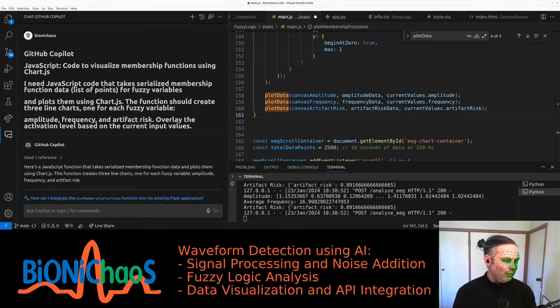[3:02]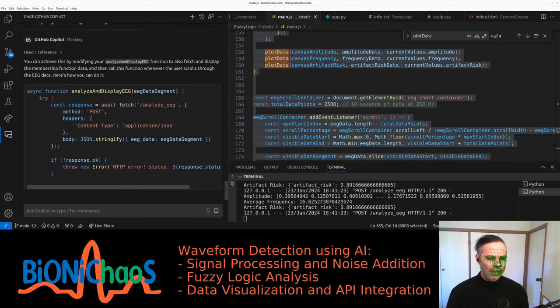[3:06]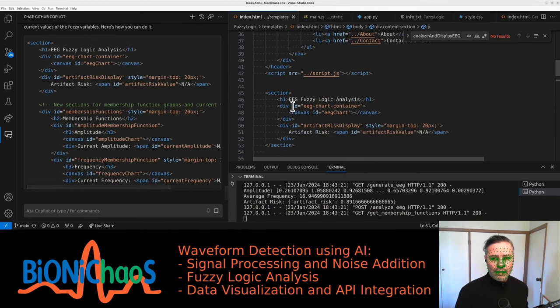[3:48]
We need to prompt for interactive EEG data scrolling. I'm sure we'll have to change the HTML. So currently this one is not being used. Right, that's why we need this code. We're modifying an existing function, stringify, async, analyze and display. Plot data is not working. Analyze and display. Right, we need to also, how about the prompt for changing the HTML code? Fuzzy logic analysis, we have the EEG chart, new section, so we can replace this section.
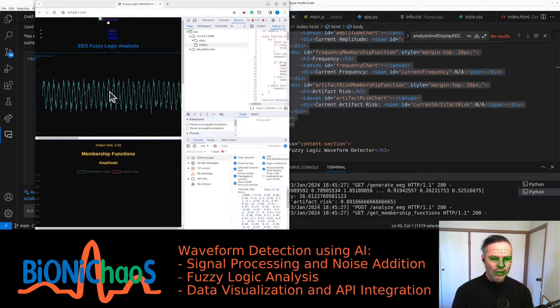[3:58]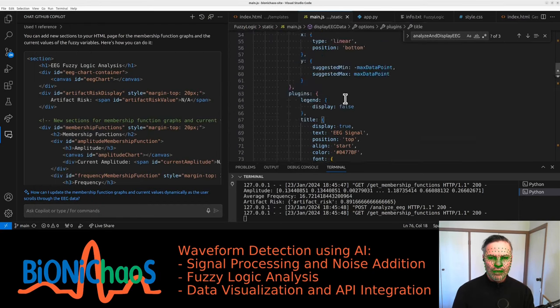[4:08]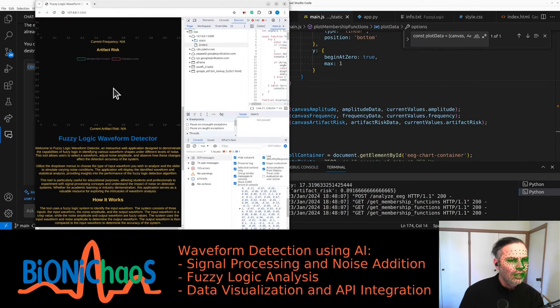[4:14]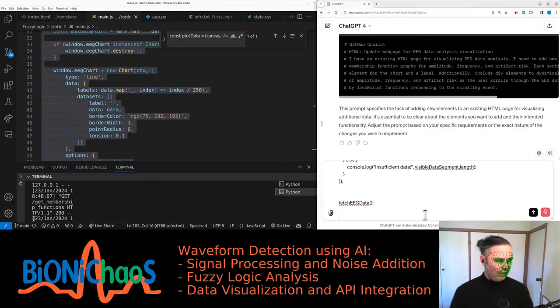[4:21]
Okay, we got a lot of stuff. Yeah, I'd like to combine alpha trace frequency, amplitude. I'm getting an error in here. It's a JavaScript issue, isn't it? It's the const plot data, activation level, membership function. Meant to be multiple membership functions. The plots are not displaying anything. Is there anything wrong with the code, even when I move the scroller?
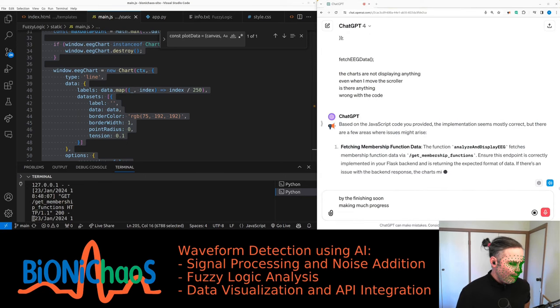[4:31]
Based on the JavaScript code you provided, the implementation seems mostly correct, but there are a few areas where issues might arise. Fetching membership function data. The function analyze and display EEG fetches membership function data via get_membership_functions. Ensure this endpoint is correctly implemented in your Flask backend and is returning the expected format of data. If there's an issue with the backend response, the charts might not display correctly. Data format and parsing. The plot membership functions function expects data in a specific format, an array of x, y pairs for each membership function. Make sure the data received from the backend matches this expectation. The canvas elements, amplitude chart, frequency chart, artifact risk chart, exist in your HTML with the correct IDs.
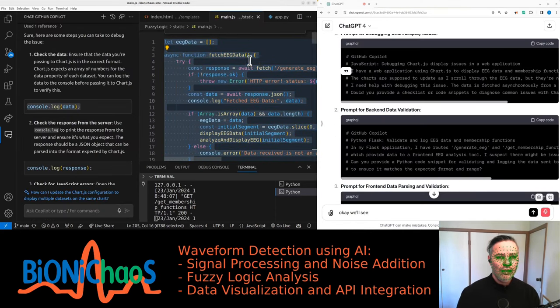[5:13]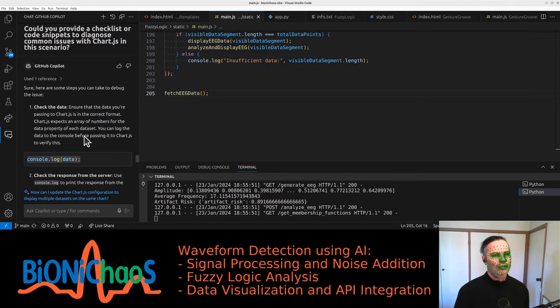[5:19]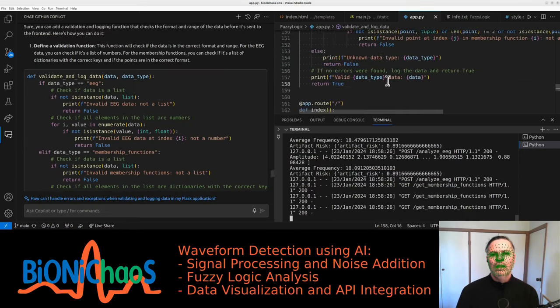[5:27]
Can you generate prompts for GitHub Copilot? We're also using Control I for the whole thing. What? That was too generic a prompt. Validate and log EEG data and membership functions. This function is not being called, is it?
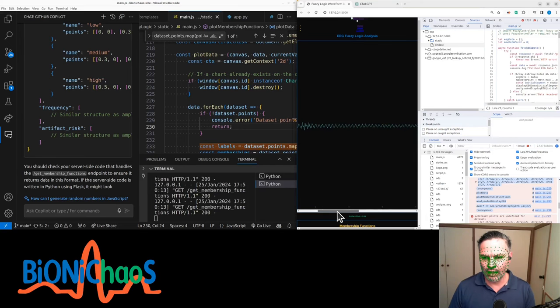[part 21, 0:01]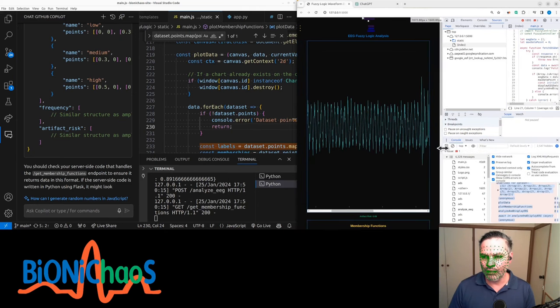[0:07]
EEG, this is synthetic EEG. We can scroll through it. I can hear my CPU complaining a bit. Why it's not using mostly GPU. We're trying to fix this thing where when you scroll it makes, I don't know what, where that came from. We'll later turn it into a feature instead of it being a bug.
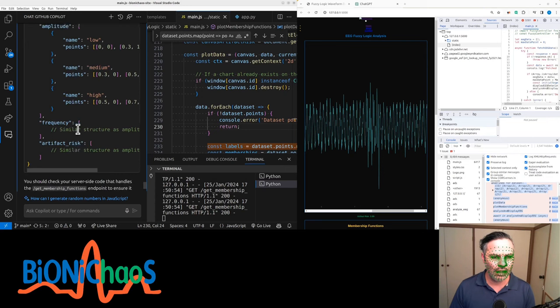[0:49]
But currently we have this synthetic EEG and an EMG artifact every now and then. So it could be like you're chewing during EEG recording or anything like that. And we're making a detector that will tell us the likelihood of the EEG being contaminated by EMG artifacts. So we have everything here.
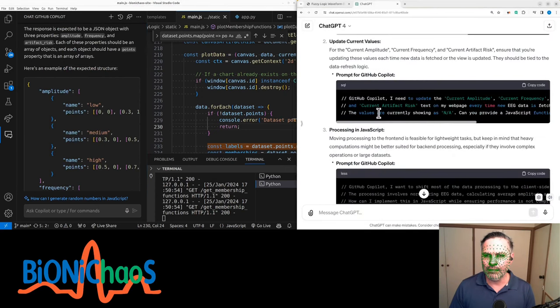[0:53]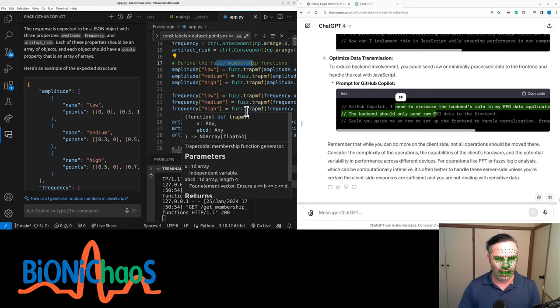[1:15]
ChatGPT-4 is writing prompts for GitHub Copilot for us. So essentially, yeah, we're trying to minimize backend use, but that didn't work. So we'll leave it as it is at the moment. At the moment, all the fuzzy membership functions are happening on the server side. That's okay for now. We'll have to change them as well.
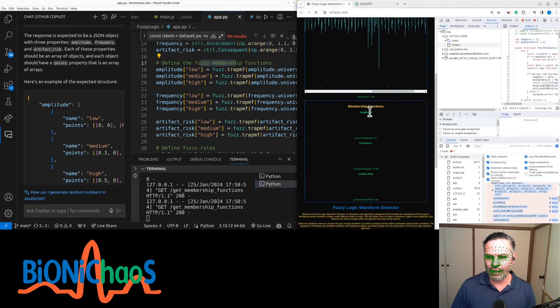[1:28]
Actually trying to transfer them into, so let's see, just a sanity check. The frequency 17.4, 17.3. Yeah, it should be lower, so they come every 10 seconds or so. It's going 18. Was it 16? Yeah, can't really see those numbers. They are green on black. We'll change that as well.
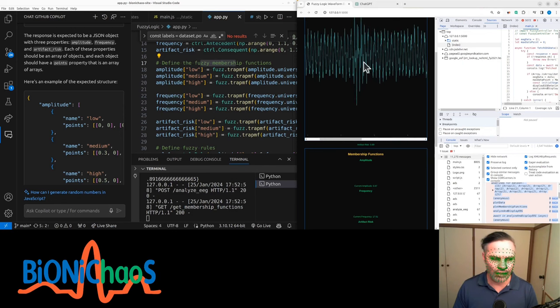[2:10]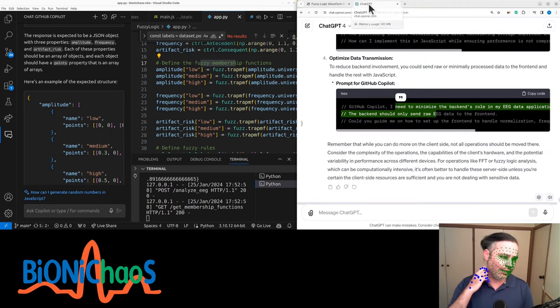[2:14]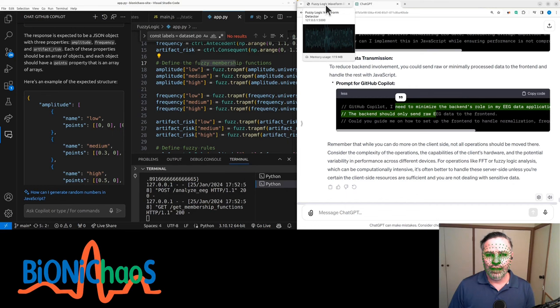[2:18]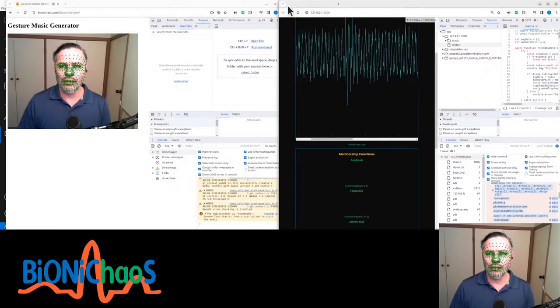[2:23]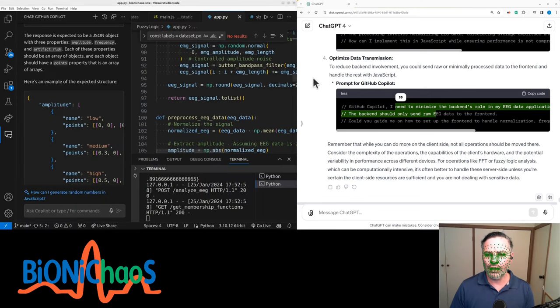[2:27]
So there should be no EMG there. We expect the frequency to be lower. The amplitude 0.86, 0.87, bugger all. Yeah, that EMG artifact is not much bigger than the actual EEG waveform. I have to fix all those. Still need a code. Back to the original code.
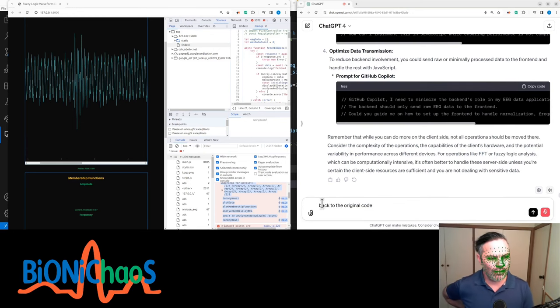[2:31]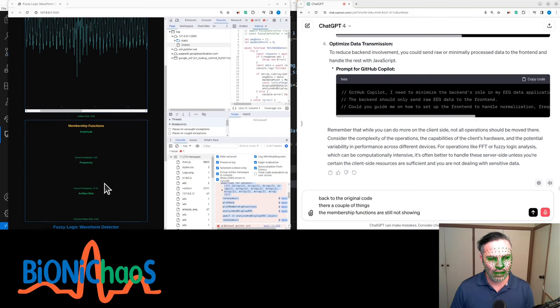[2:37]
There are a couple of things. The membership functions are still not showing anything. We need better prompts for GitHub Copilot. But please look at the code I provided in the beginning of this chat. Let me know if you still have access to it. If not, I'll share it again.
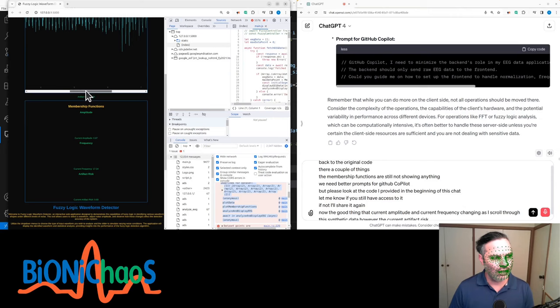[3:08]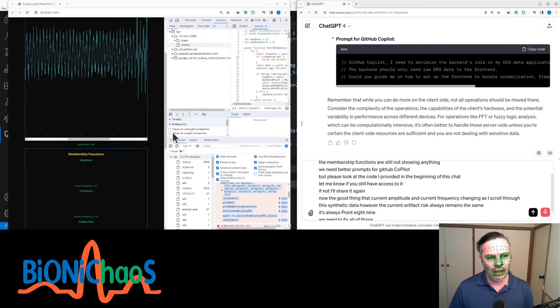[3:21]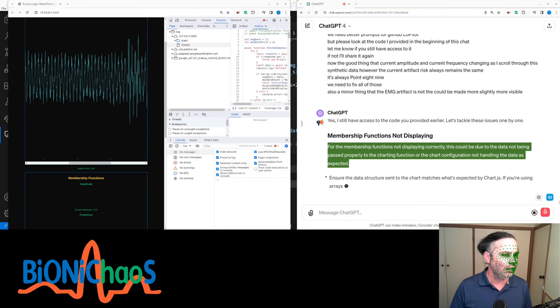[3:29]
Now, the good thing is that current amplitude and current frequency are changing as I scroll through the synthetic data. However, the current artifact risk always remains the same. It's always 0.89. We need to fix all of those. Also, a minor thing: the EMG artifact could be made slightly more visible. This could be due to the data not being passed properly to the charting function or the chart configuration not handling the data as expected.
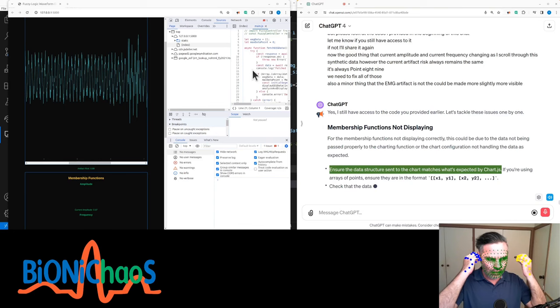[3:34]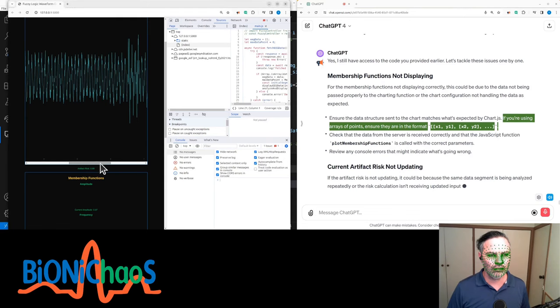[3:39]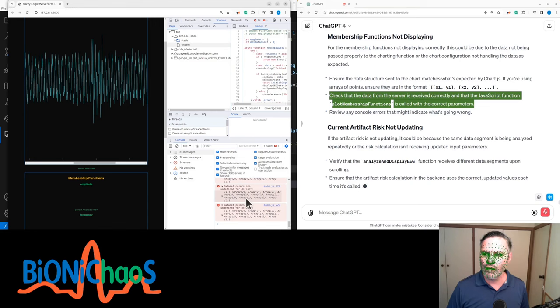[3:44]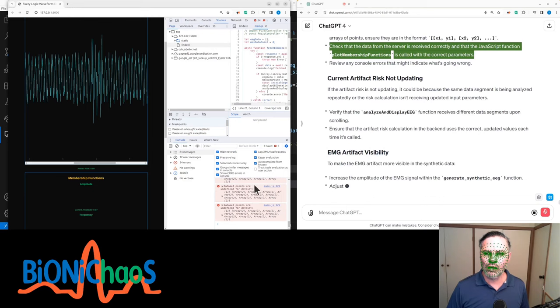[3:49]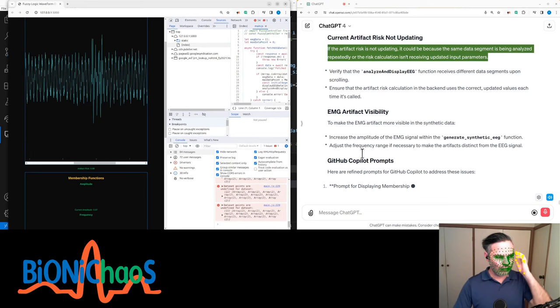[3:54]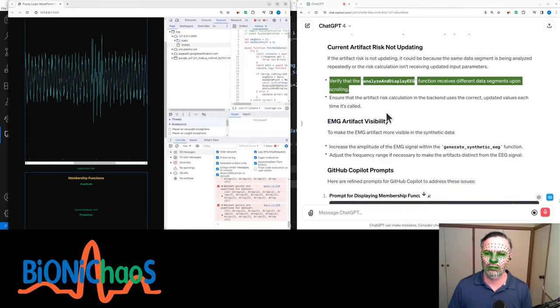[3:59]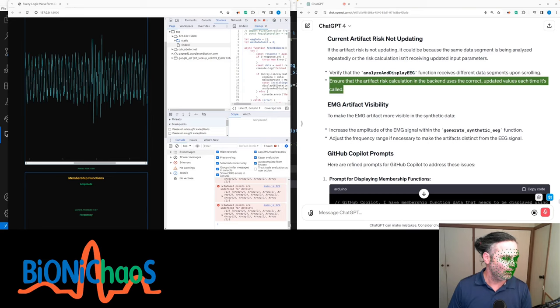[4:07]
Ensure the data structure sent to the chart matches what's expected by Chart.js. If you're using arrays of points, ensure they're in the format x1, y1, x2, y2. Check that the data from the server is received correctly and that the JavaScript function plot membership functions is called with the correct parameters. Review any console errors that might indicate what's going wrong. If the artifact risk is not updating, it could be because the same data segment is being analyzed repeatedly or the risk calculation isn't receiving updated input parameters. Verify that the analyze and display EEG function receives different data segments upon scrolling. Ensure that the artifact risk calculation in the backend uses the correct, updated values each time it's called.
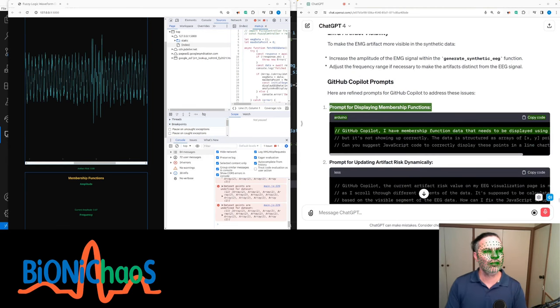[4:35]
To make the EMG artifact more visible in the synthetic data, increase the amplitude of the EMG signal within the generate_synthetic_EEG function. Adjust the frequency range if necessary to make the artifacts distinct from the EEG signal. Here are refined prompts for GitHub Copilot to address these issues. Prompt for displaying membership functions. I have membership function data that needs to be displayed using Chart.js, but it's not showing up correctly. The data is structured as arrays of X, Y points. Can you suggest JavaScript code to correctly display these points in a line chart?
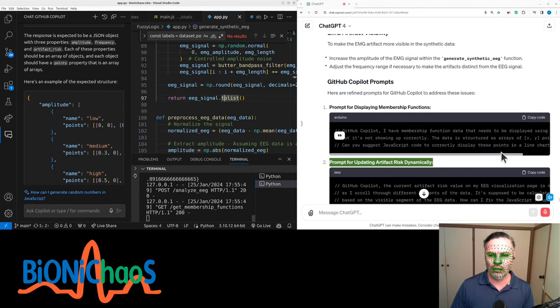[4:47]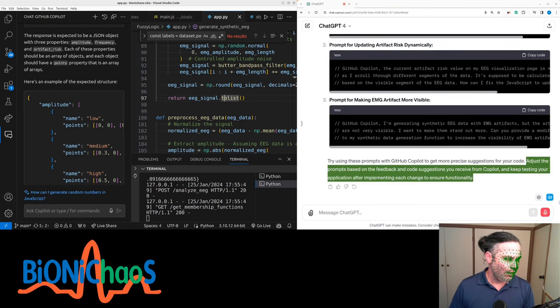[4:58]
Prompt for updating artifact risk dynamically. Prompt for making EMG artifact more visible. Try using these prompts with GitHub Copilot to get more precise suggestions for your code. Adjust the prompts based on the feedback and code suggestions you receive from Copilot, and keep testing your application after implementing each change to ensure functionality.
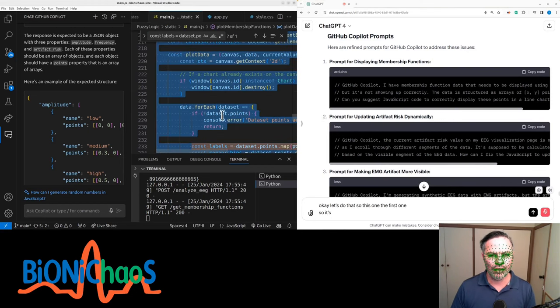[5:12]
Okay, let's do that. So this one, the first one, is for JavaScript code. We just select all of it. Obviously, we don't need to refer to GitHub Copilot as GitHub Copilot. And it says I have membership function data that needs to be displayed using Chart.js. Let me double check that. Yeah, we're using Chart.js.
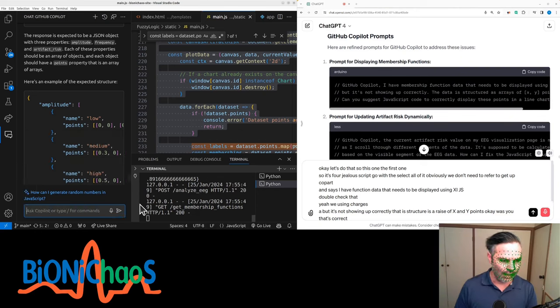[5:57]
But it's not showing up correctly. The data structure is arrays of X and Y points. Okay, we'll assume that's correct. Can you suggest JavaScript code to correctly display these points? Can you suggest how to change the JavaScript code to correctly display this?
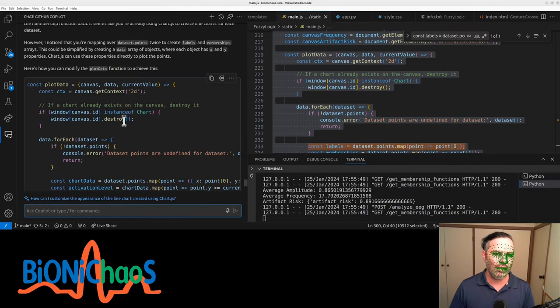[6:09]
Did it just get deleted on me? Do it again quickly. How to change. So it's actually giving me code. Suggesting to change plot data could be simplified, mapping over the dataset points twice. Didn't realize I'm doing that. It's just giving an error.
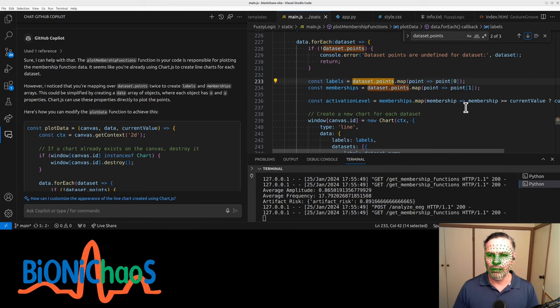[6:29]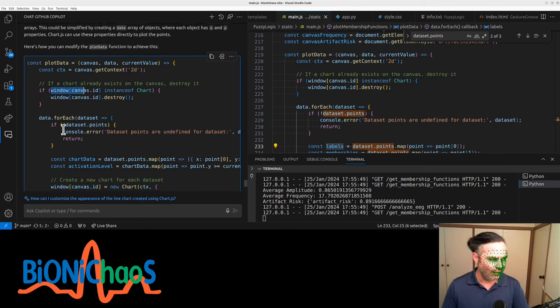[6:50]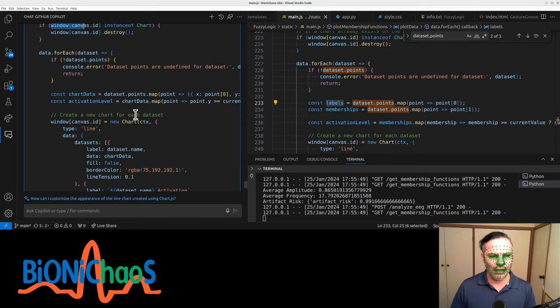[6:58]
If there are no points, then there is mapping. Oops. No, wait. That's mapping the labels and memberships separately. So when I... Now that looks legit, but okay, what's the suggestion? So we have plot data, canvas ID, window's chart destroy. Yeah, if everything was plotted before, it will destroy that. Just an error check. Okay, we still have the two maps checking for current value.
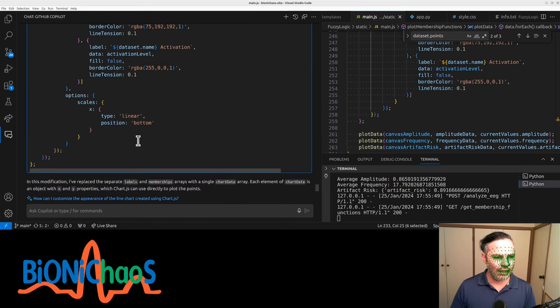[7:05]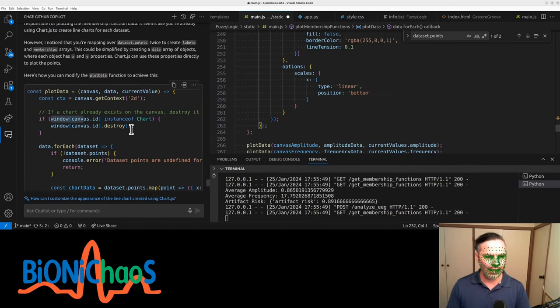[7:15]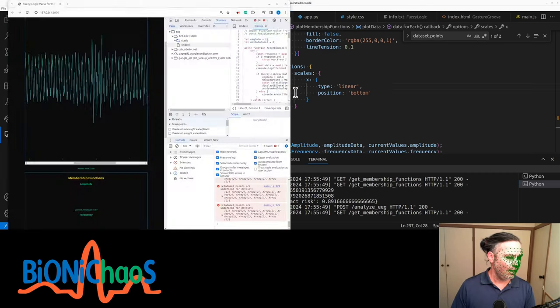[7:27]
Well, considering what we currently have isn't working. Step 5, it's const data plot current value. In this modification, I replaced the separate labels and memberships array with a single chart data array. Each element of chart data is an object with X and Y properties. Let's check. No, I'm getting an error. So getting an error before.
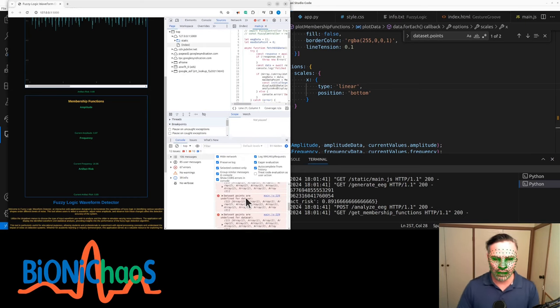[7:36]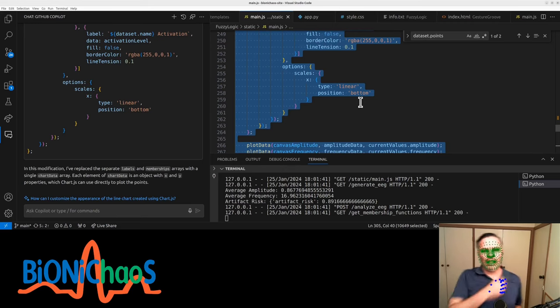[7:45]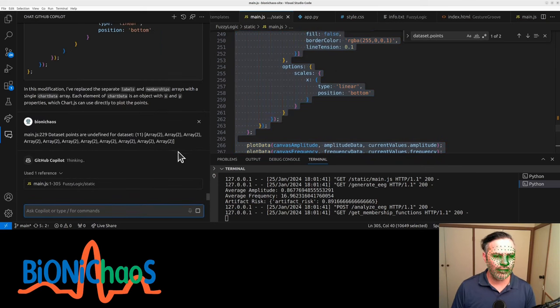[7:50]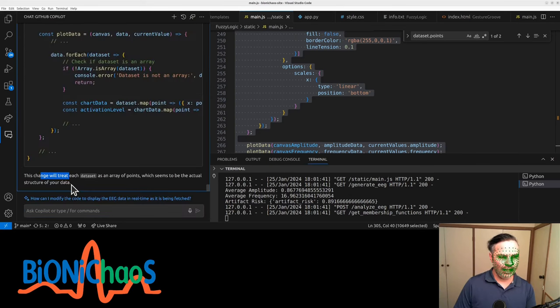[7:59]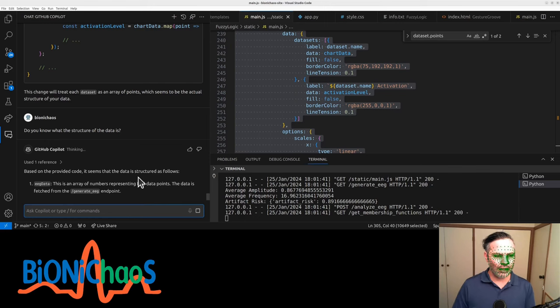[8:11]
Yeah, GitHub Copilot is not great. If it will keep making mistakes, we might start a new session with GPT-4. Now it will tell me to start troubleshooting, which I don't really want to do. Yes, we're having trouble with determining the structure of the data. It should know. Do you know what the structure of the data is? Yeah, the code, it says based on provided code, but I provided a sample of the data prior as well.
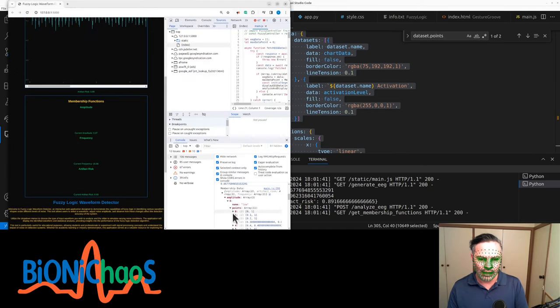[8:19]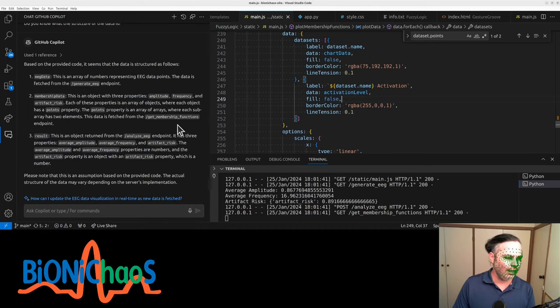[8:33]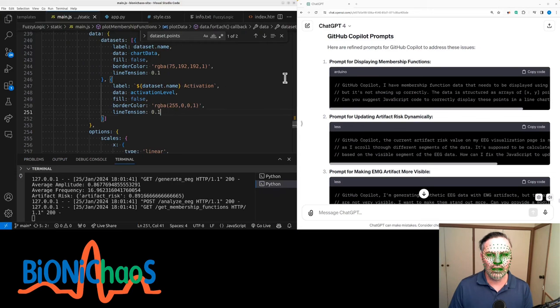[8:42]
Yeah, we have a data in this. Yeah, I have no idea why its structure seems odd. I don't know why it's not just a simple array. It's like way too complicated. I say, let me know what you think. How do you use GPT or GitHub Copilot? But I suspect GitHub Copilot won't be helping me here. So I have to start the new chat.
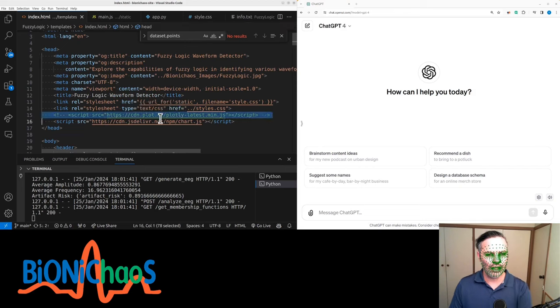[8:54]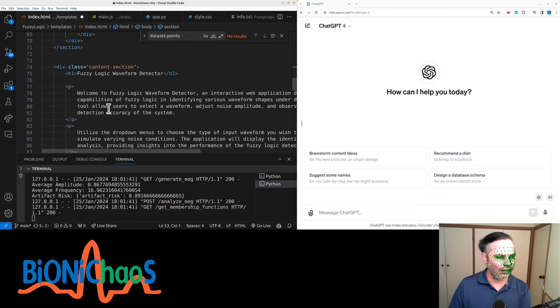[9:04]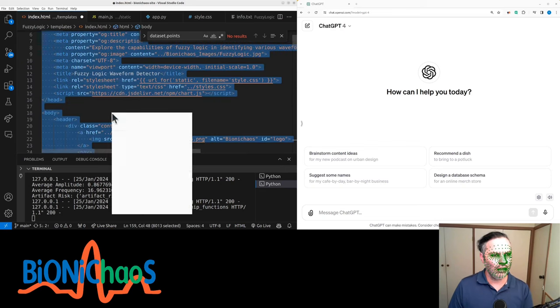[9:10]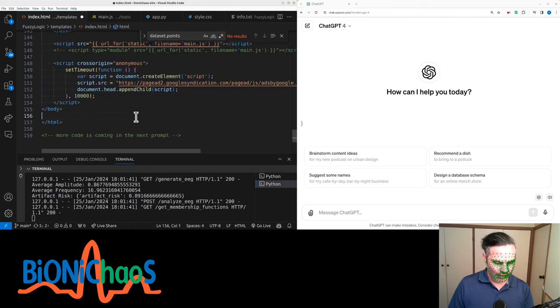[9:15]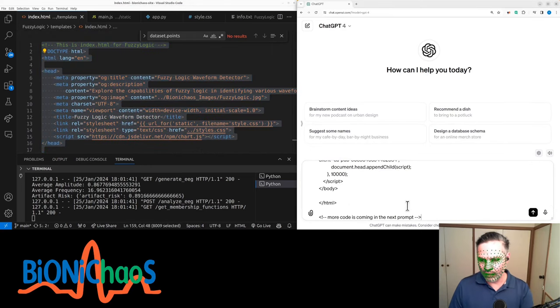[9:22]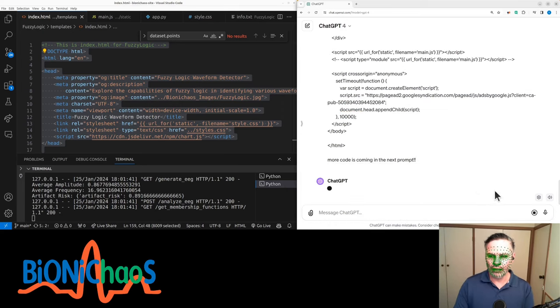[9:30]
Yeah, we're using chart.js. We have a section for new sections for membership functions, graph current values. Can get rid of that. Yeah, we have the description at the bottom that we need to rewrite eventually as well. Just quickly a format document. And we're saying that more code is coming in the next prompt. Hopefully it doesn't ignore it. Might need to put like exclamation marks there or something. Because it's like 50-50 it will ignore it or not.
Looks like you're working on a detailed HTML page for your project. The code you've provided is pretty well structured. It includes sections for meta tags, style sheets, the body with various HTML elements, and some JavaScript for functionality and analytics. If you have specific questions or need help with certain aspects of the code, feel free to ask.
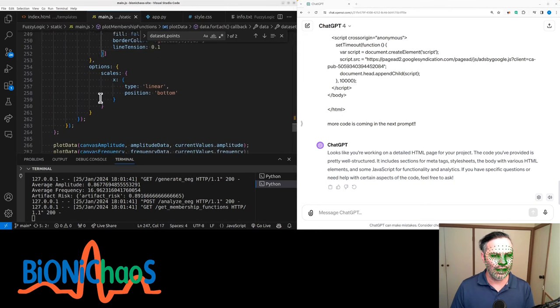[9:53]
Right, so we have that, then we have the JavaScript. Just quickly. Yeah, this is an attempt to do more stuff on the front end, on the user side. That didn't work. Might get rid of that. Yeah, we have two global variables there. Yeah, we have quite a bit of debugging. Get rid of validate the structure of the membership data. So it's meant to be array membership data. Then should have amplitude, frequency, and artifact risk.
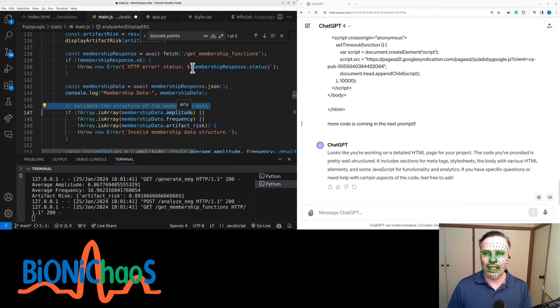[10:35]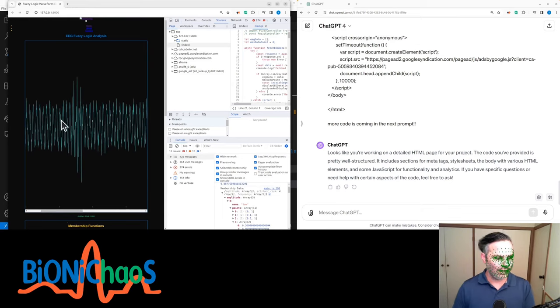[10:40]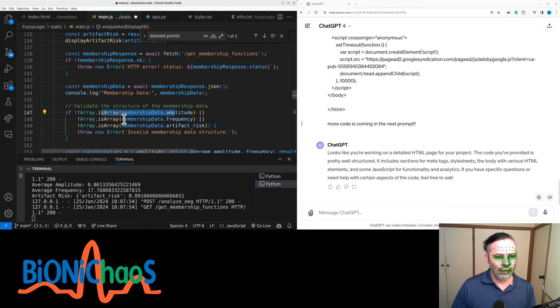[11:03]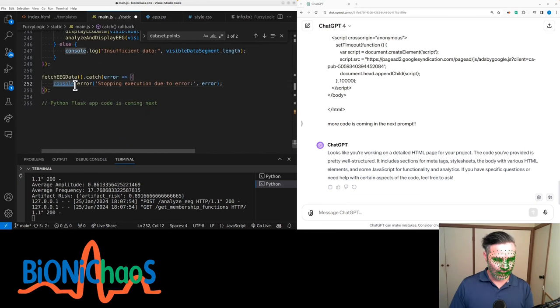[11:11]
So just a recap. We are in this EEG data set, so we're extracting amplitude and frequency, and based on that, we make membership functions that will essentially determine to what degree this segment of the data has EMG in it. So the chart already exists. I'm gonna destroy it. Yeah, that's just clearing the chart before plotting something else.
And that's okay. Let's just format document. It's the same. And we wanna make sure it doesn't ignore this prompt at the end that the Python code, Flask app, is coming next. Exclamation marks seem to help.
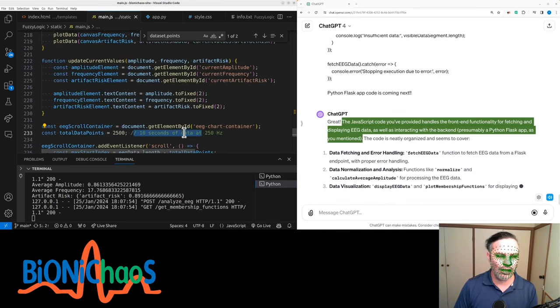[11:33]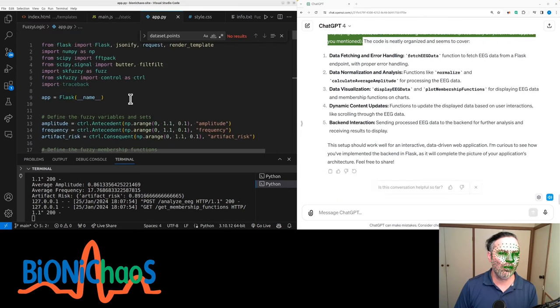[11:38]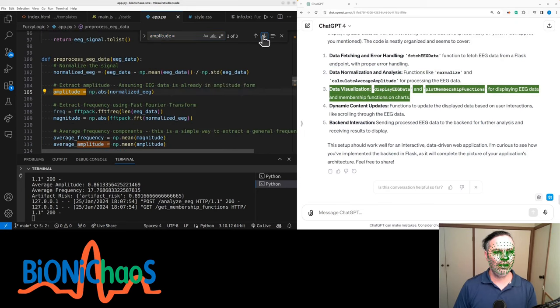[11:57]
Great. The JavaScript code you've provided handles the front-end functionality for fetching and displaying EEG data, as well as interacting with the back-end, presumably a Python Flask app, as you mentioned. The code is neatly organized and seems to cover data fetching and error handling. Fetch EEG data function to fetch EEG data from a Flask endpoint, with proper error handling. Data normalization and analysis: functions like normalize and calculate average amplitude for processing the EEG data. Data visualization: display EEG data and plot membership functions for displaying EEG data and membership functions on charts. Dynamic content updates: functions to update the displayed data based on user interactions, like scrolling through the EEG data. Backend interaction.
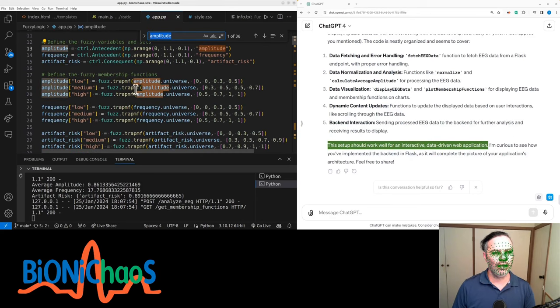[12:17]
Sending processed EEG data to the backend for further analysis and receiving results to display. This setup should work well for an interactive, data-driven web application. I'm curious to see how you've implemented the backend in Flask, as it will complete the picture of your application's architecture. Feel free to share.
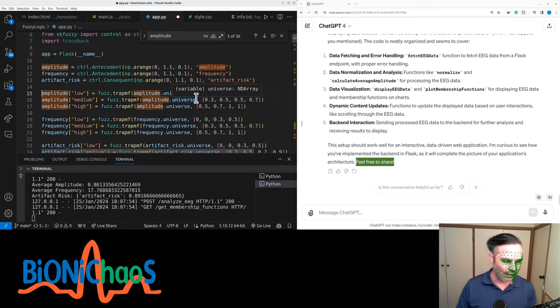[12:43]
Right, should we ask Copilot to remove all the comments? But essentially, we're defining the fuzzy variables, defining the membership functions. We'll see in a second how they look. They're meant to be trapezoidal, so essentially the threshold for each parameter. For amplitude we have low, medium, and high, and the same for frequency. And then the artifact risk. I don't like the name risk, but we'll stick with it for a while because it just works. If I change the name, I'll probably stuff something else up.
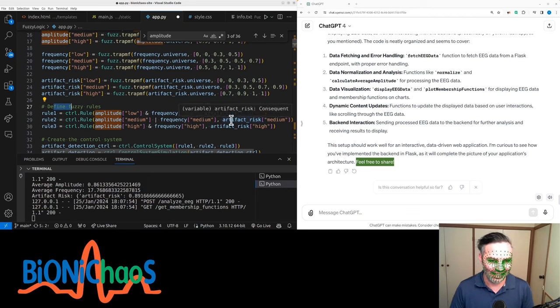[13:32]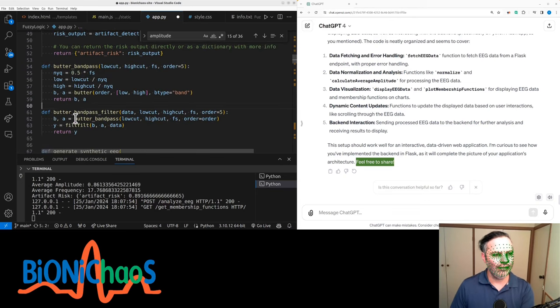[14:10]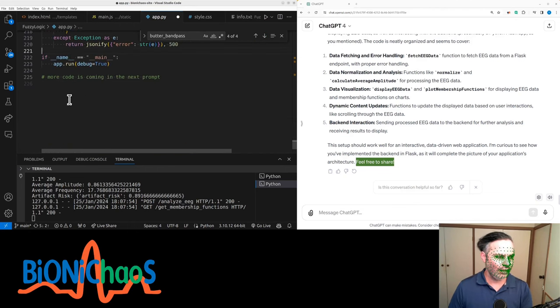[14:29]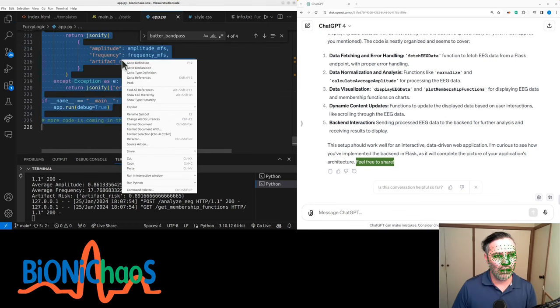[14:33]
And then we're creating, actually we might leave those comments, the control system. We'll look into it later as well. And somewhere here we're doing the defuzzification. We have two filters. Actually, why do we need the filters? It's really tempting to get rid of them. We'll keep them there for now. Because this data is synthetic, instead of filtering, we could just adjust how the data is being generated.
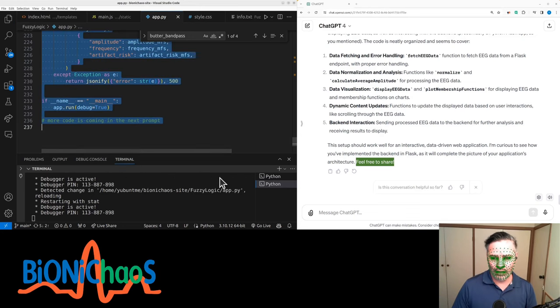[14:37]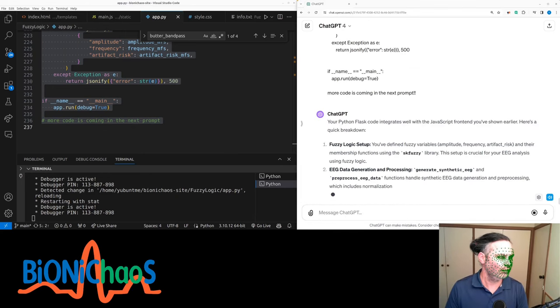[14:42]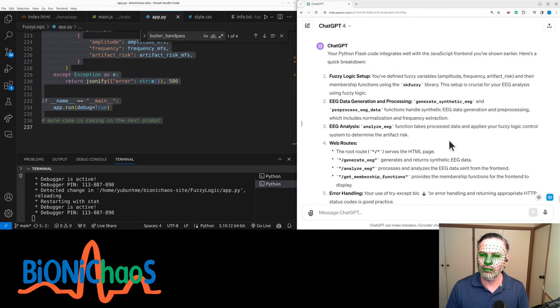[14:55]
Your Python Flask code integrates well with the JavaScript front end you've shown earlier. Here's a quick breakdown. Fuzzy logic setup: you've defined fuzzy variables, amplitude, frequency, artifact_risk, and their membership functions using the skfuzzy library. This setup is crucial for your EEG analysis using fuzzy logic. EEG data generation and processing: generate_synthetic_EEG and preprocess_EEG_data functions handle synthetic EEG data generation and preprocessing, which includes normalization and frequency extraction.
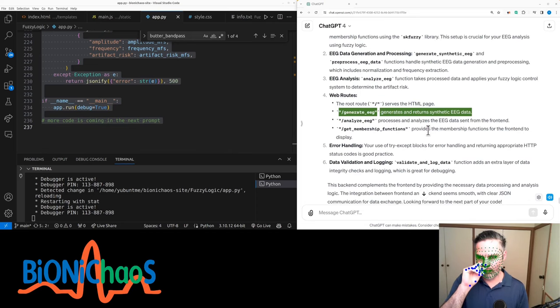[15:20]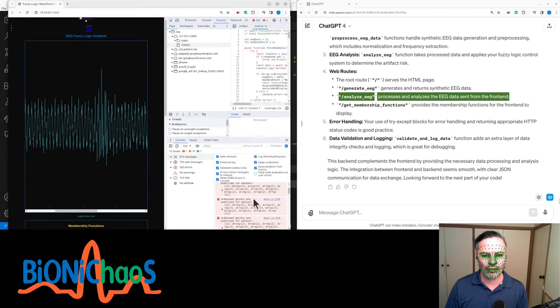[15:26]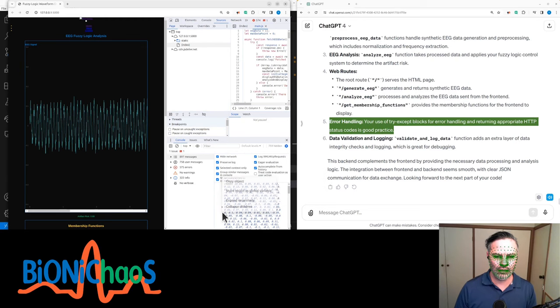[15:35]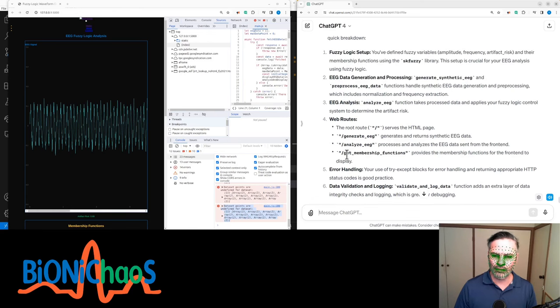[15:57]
EEG analysis: the analyze_EEG function takes processed data and applies your fuzzy logic control system to determine the artifact risk. The root serves the HTML page. generate_EEG generates and returns synthetic EEG data. analyze_EEG processes and analyzes the EEG data sent from the front end. get_membership_functions provides the membership functions for the front end to display. Error handling: your use of try-except blocks for error handling and returning appropriate HTTP status codes is good practice. Data validation and logging: the validate_and_log_data function adds an extra layer of data integrity checks and logging, which is great for debugging. This backend complements the front end by providing the necessary data processing and analysis logic. The integration between front end and backend seems smooth, with clear JSON communication for data exchange. Looking forward to the next part of your code.
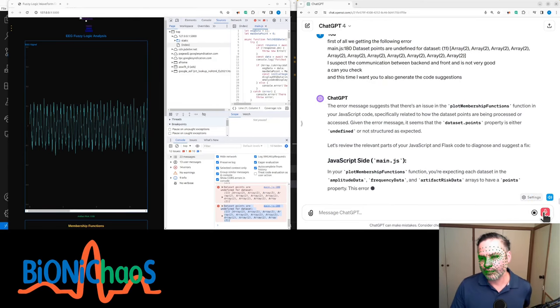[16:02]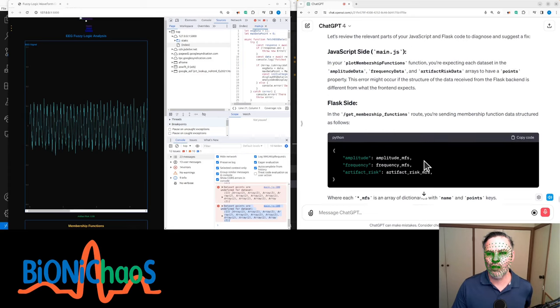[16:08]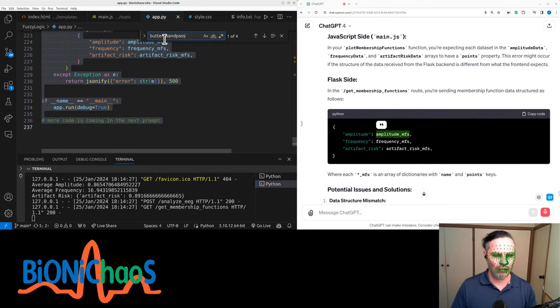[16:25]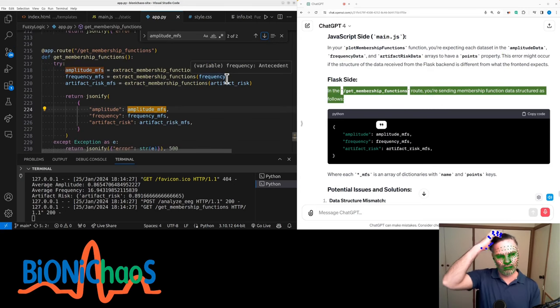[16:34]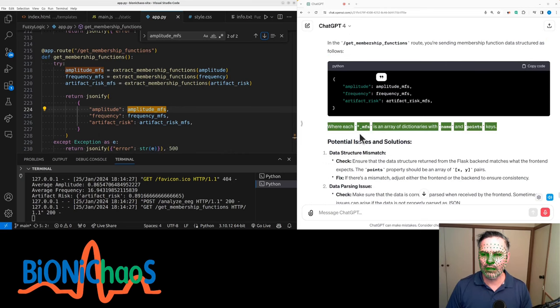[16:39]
The error message suggests that there's an issue in the plotMembershipFunctions function in your JavaScript code, specifically related to how the dataset points are being processed or accessed. Given the error message, it seems that the dataset points property is either undefined or not structured as expected. Let's review the relevant parts of your JavaScript and Flask code to diagnose and suggest a fix. In your plotMembershipFunctions function, you're expecting each dataset in the amplitude data, frequency data, and artifact risk data arrays to have a points property. This error might occur if the structure of the data received from the Flask backend is different from what the frontend expects. In the get_membership_functions route, you're sending membership function data structured as follows, where each asterisk_MFS is an array of dictionaries with name and points keys.
Data structure mismatch. Check: ensure that the data structure returned from the Flask backend matches what the frontend expects. The points property should be an array of x, y pairs. Fix: if there's a mismatch, adjust either the frontend or the backend to ensure consistency. Check: make sure that the data is correctly parsed when received by the frontend. Sometimes issues can arise if the data is not properly parsed as JSON.
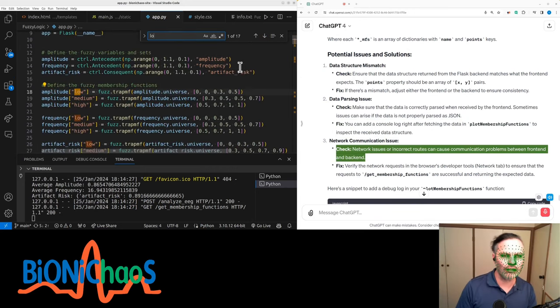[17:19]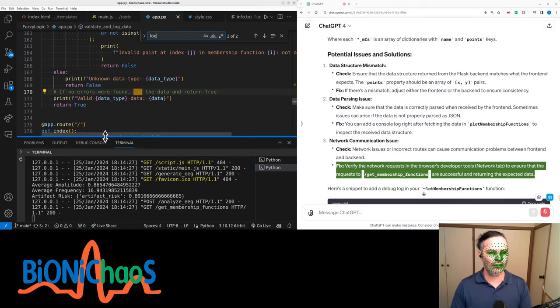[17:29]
Fix. You can add a console log right after fetching the data in plot membership functions to inspect the received data structure. Check. Network issues or incorrect routes can cause communication problems between frontend and backend. Fix. Verify the network requests in the browser's developer tools, network tab, to ensure that the requests to get_membership_functions are successful and returning the expected data.
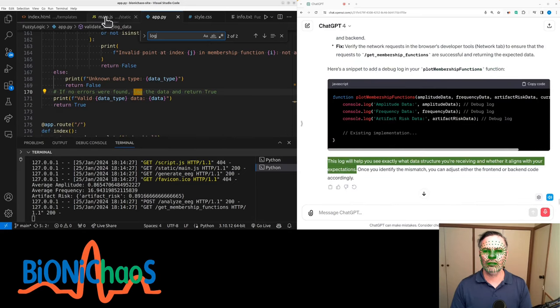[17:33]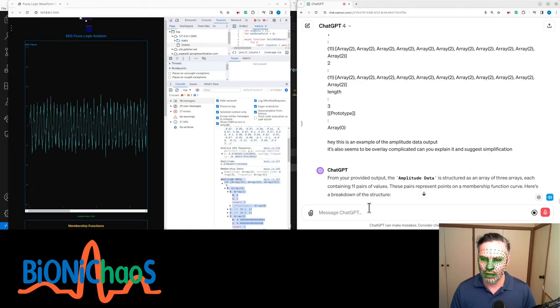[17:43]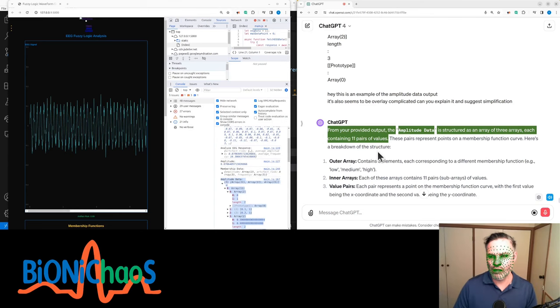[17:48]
Here's a snippet to add a debug log in your plot membership functions function. This log will help you see exactly what data structure you're receiving and whether it aligns with your expectations. Once you identify the mismatch, you can adjust either the frontend or backend code accordingly. From your provided output, the amplitude data is structured as an array of three arrays, each containing 11 pairs of values. These pairs represent points on a membership function curve.
Here's a breakdown of the structure. Outer array contains three elements, each corresponding to a different membership function, e.g., low, medium, high. Inner arrays. Each of these arrays contains 11 pairs, subarrays, of values. Value pairs. Each pair represents a point on the membership function curve, with the first value being the x-coordinate and the second value being the y-coordinate. This structure is typical for representing fuzzy membership functions where each function is defined by several points on a graph.
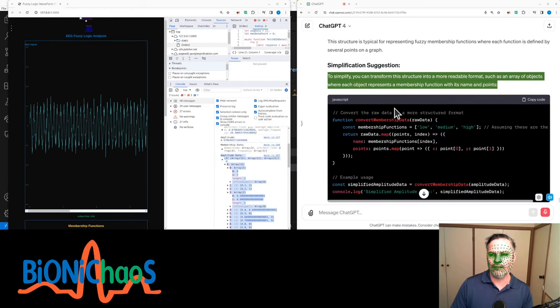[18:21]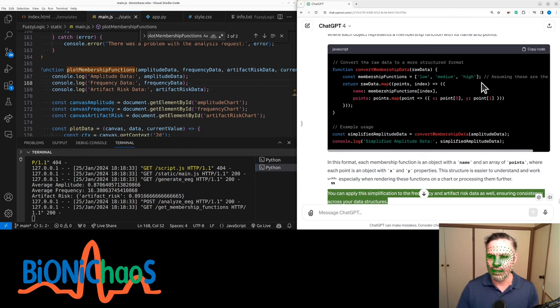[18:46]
To simplify, you can transform this structure into a more readable format, such as an array of objects where each object represents a membership function with its name and points. In this format, each membership function is an object with a name and an array of points, where each point is an object with x and y properties. This structure is easier to understand and work with, especially when rendering these functions on a chart or processing them further. You can apply this simplification to the frequency and artifact risk data as well, ensuring consistency across your data structures. Yeah, with those other names, low, medium, and high.
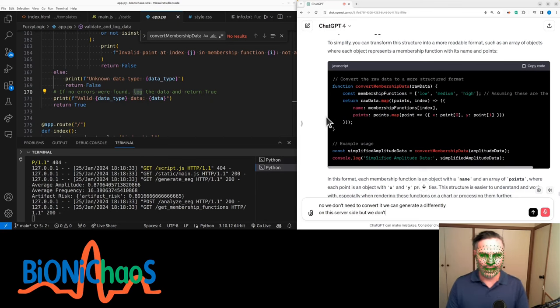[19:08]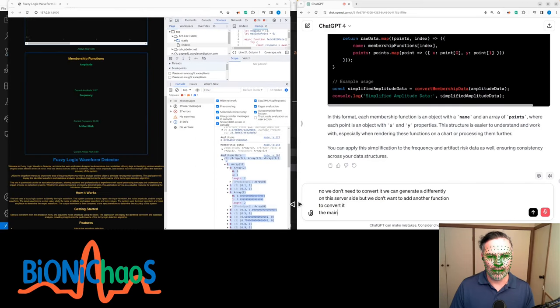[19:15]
Okay, so we have convert membership. We don't want to convert it. No, we don't need to convert it. We can generate it differently on the server side, but we don't want to add another function to convert it. The main problem is that these membership functions are not being currently displayed on the chart correctly. The charts are empty.
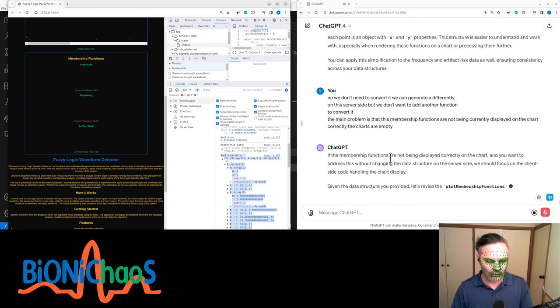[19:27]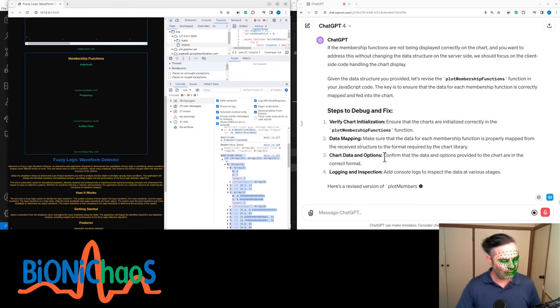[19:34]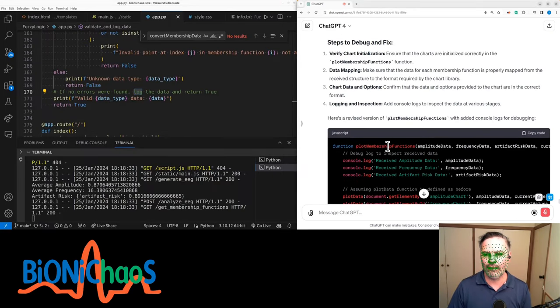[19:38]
Yep. If the membership functions are not being displayed correctly on the chart, and you want to address this without changing the data structure on the server side, we should focus on the client side code handling the chart display. Given the data structure you provided, let's revise the plot membership functions function in your JavaScript code. The key is to ensure that the data for each membership function is correctly mapped and fed into the chart. Verify chart initialization. Ensure that the charts are initialized correctly in the plot membership functions function.
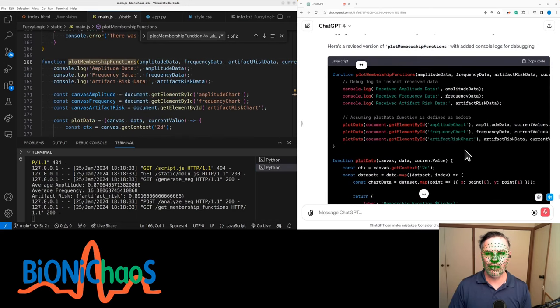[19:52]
Data mapping. Make sure that the data for each membership function is properly mapped from the received structure to the format required by the chart library. Chart data and options. Confirm that the data and options provided to the chart are in the correct format. Logging and inspection. Add console logs to inspect the data at various stages. Here's a revised version of plot membership functions with added console logs for debugging. After implementing the revised code, check the console logs in your browser's developer tools. This will help you verify if the data is correctly processed for the chart.
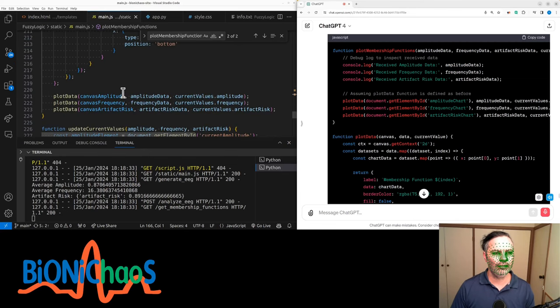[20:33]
If the charts are still not displaying correctly, inspect the format of datasets in the plot data function to ensure it aligns with what the chart.js library expects. Make sure that the canvas elements for the charts are correctly referenced and that the dimensions are properly set. Verify the chart.js is correctly included and initialized in your project. These steps should help you identify where the issue lies in displaying the membership functions on the chart.
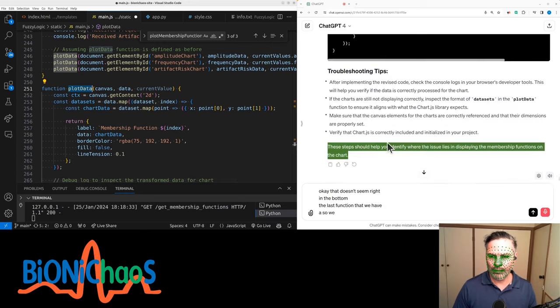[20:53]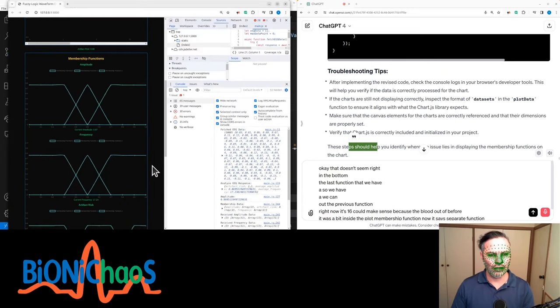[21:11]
Okay, that doesn't seem right. Let's pop it in the bottom. It's the last function that we have. So we have plot data. We can comment out the previous function. Right. No, it actually could make sense because the plot data before was a bit inside the plot membership function. Now it's a separate function. So that could actually... Right.
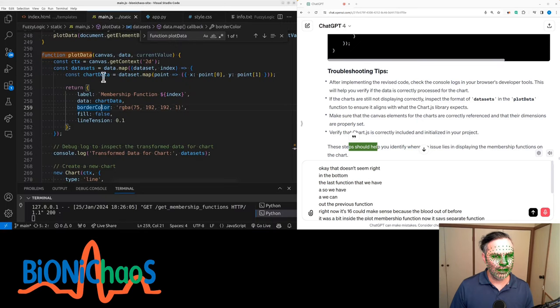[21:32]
It actually works. Yeah. It actually works. So I need to fix the colors. But yeah, those are the trapezoidal membership functions. This one looks triangular. It's not giving me some fake stuff, is it? There's trapezoidal and triangle in between. Is that the case?
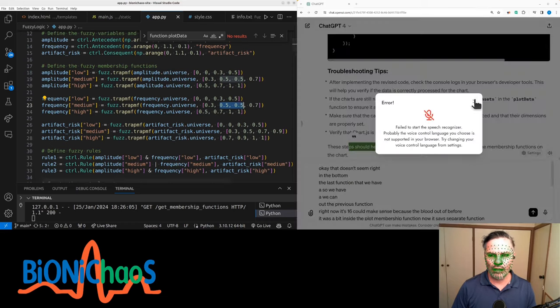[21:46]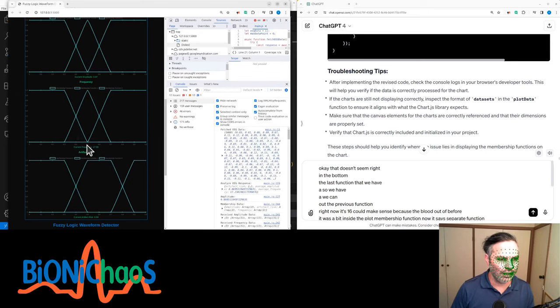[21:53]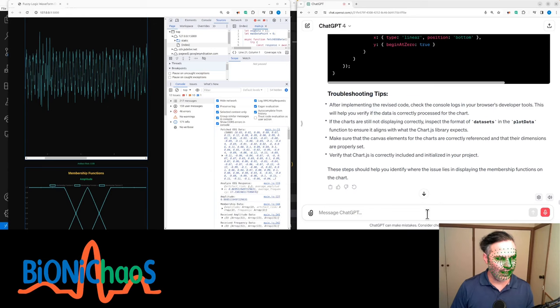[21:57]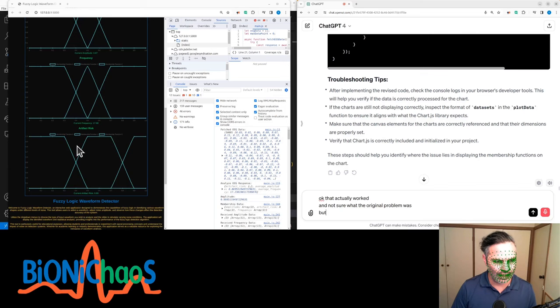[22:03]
No, they're meant to be all trapezoidal. Okay, I know why. Because this number is the same, so it actually makes a triangle. So this 0.5. No, that's okay. Okay, that actually worked. Not sure what the original problem was, but thanks for fixing it.
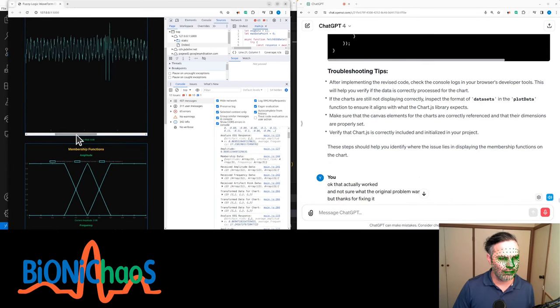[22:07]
Great to hear that it worked. Sometimes the issues with data visualization can be quite subtle, and a fresh look or a different approach to handling the data can resolve them. It's possible that the original problem was related to how the data was structured or interpreted by the charting library. If you have any more questions or run into other issues, feel free to ask.
Happy coding. The artifact risk is always the same value. Can we make sure it's being calculated over the displayed window and not the entire set?
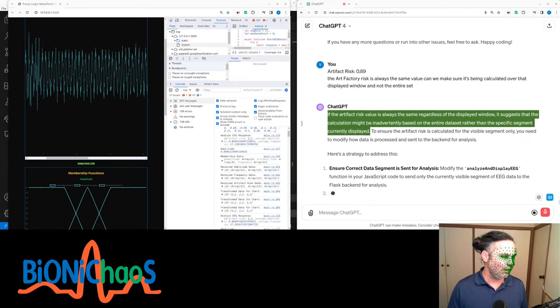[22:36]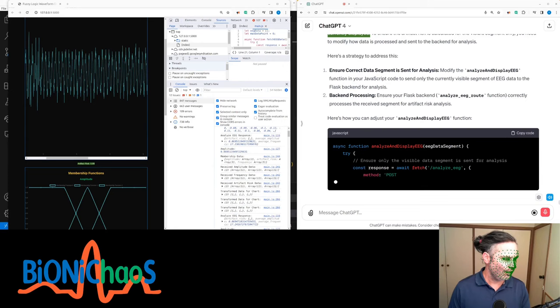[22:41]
If the artifact risk value is always the same regardless of the displayed window, it suggests that the calculation might be inadvertently based on the entire dataset rather than the specific segment currently displayed. To ensure the artifact risk is calculated for the visible segment only, you need to modify how data is processed and sent to the backend for analysis. Here's a strategy to address this.
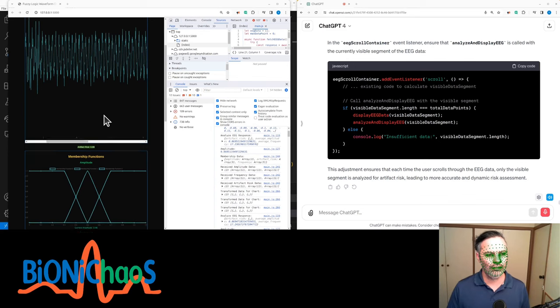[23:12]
Ensure the correct data segment is sent for analysis. Modify the analyze and display EEG function in your JavaScript code to send only the currently visible segment of EEG data to the Flask backend for analysis. Backend processing: ensure your Flask backend, analyze_EEG_route function, correctly processes the received segment for artifact risk analysis. Here's how you can adjust your analyze and display EEG function.
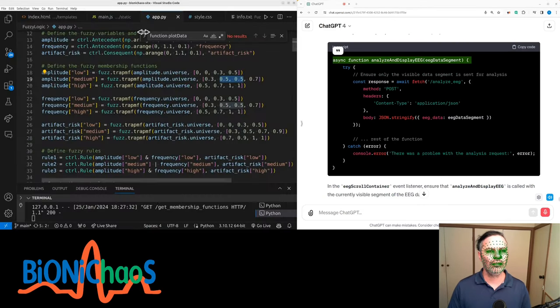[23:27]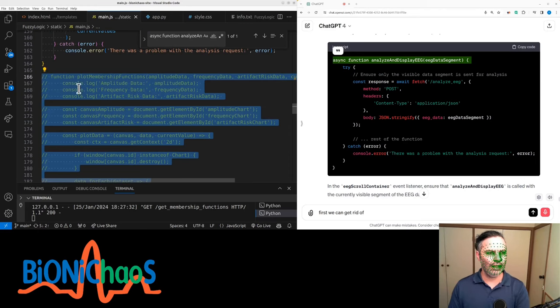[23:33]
In the EEG scroll container event listener, ensure that analyze and display EEG is called with the currently visible segment of the EEG data. This adjustment ensures that each time the user scrolls through the EEG data, only the visible segment is analyzed for artifact risk, leading to more accurate and dynamic risk assessment. First of all, we can get rid of all that.
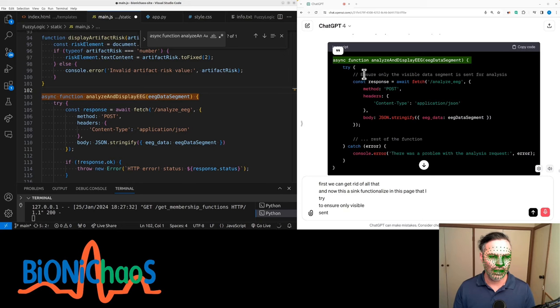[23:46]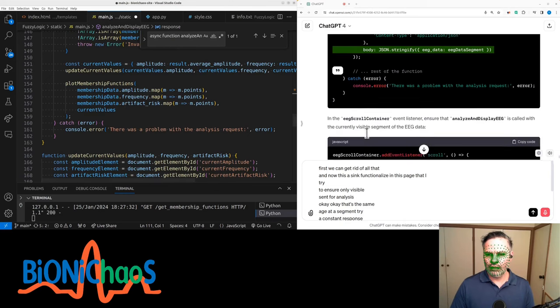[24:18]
And now in this async function, analyze and display EEG data, we try to ensure only the visible data segment is sent for analysis. Okay, that's the same. EEG data segment, try, const response = await fetch analyze EEG, method POST, headers, content type application/JSON, body JSON.stringify EEG data, which is EEG data segment, catch console error. Okay. In the EEG scroll container event listener, ensure that analyze and display EEG is called with the currently visible segment of the EEG data.
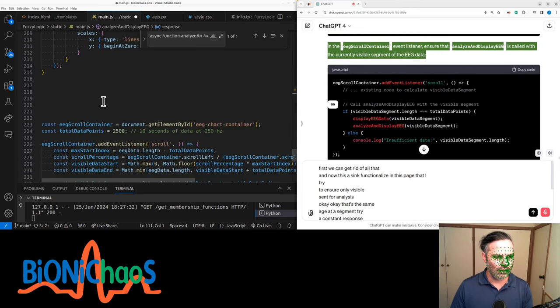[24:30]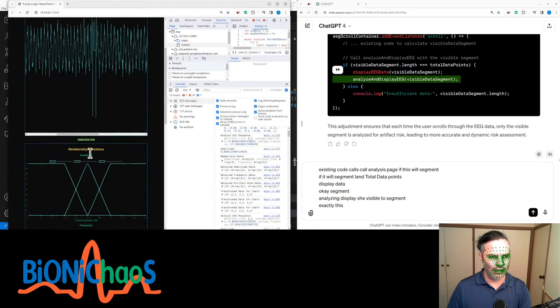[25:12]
Right, so we have the container at the bottom that's responsible for scrolling through the data. Existing code calls analyze and display EEG with the visible segment. If visible segment length is total data points, display EEG data. Okay, visible data segment, analyze and display EEG, visible data segment. Okay, pretty sure it's exactly the same. Display, save, visible segment.
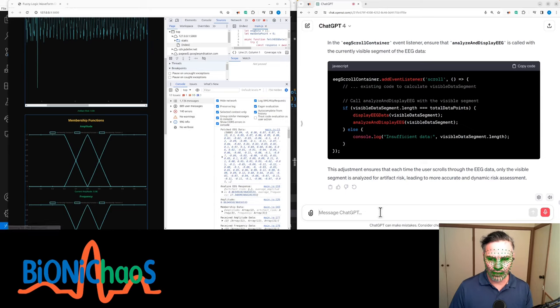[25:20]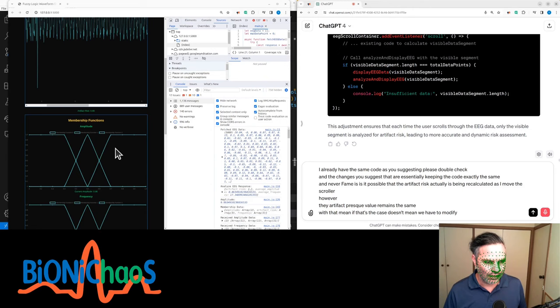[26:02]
Okay, maybe that value is being recalculated, but it just stays the same. I already have the same code as you're suggesting. Please double check. The changes you suggested are essentially keeping the code exactly the same. Another thing: is it possible that the artifact risk actually is being recalculated as I move the scroller? However, the artifact risk value remains the same. If that's the case, does it mean we have to modify our membership functions?
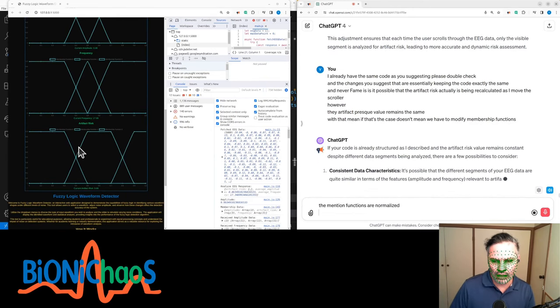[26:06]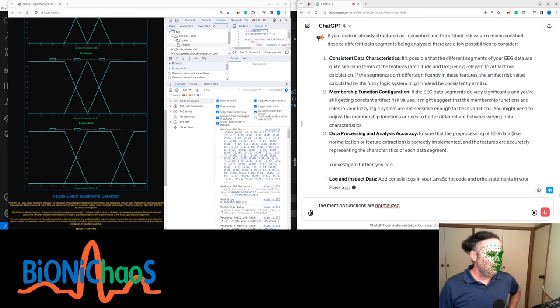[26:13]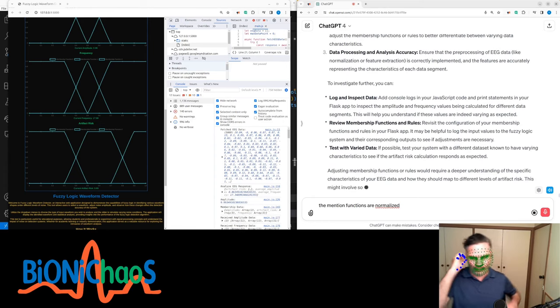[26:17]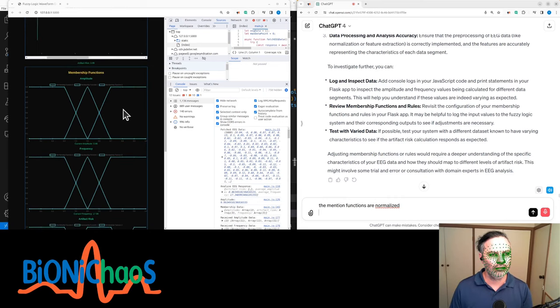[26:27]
The membership functions are normalized. If your code is already structured as I described and the artifact risk value remains constant despite different data segments being analyzed, there are a few possibilities to consider. Consistent data characteristics: it's possible that the different segments of your EEG data are quite similar in terms of the features, amplitude and frequency, relevant to artifact risk calculation. If the segments don't differ significantly in these features, the artifact risk value calculated by the fuzzy logic system might indeed be consistently similar. Membership function configuration.
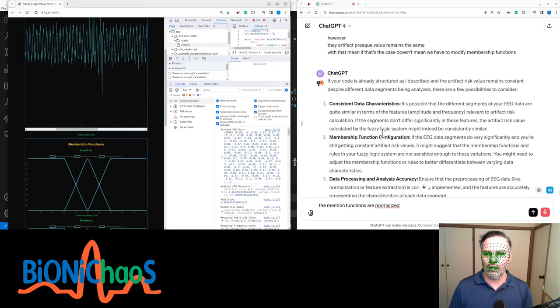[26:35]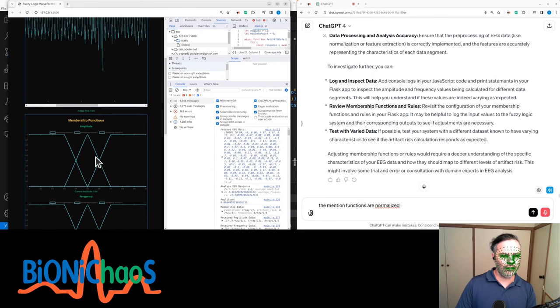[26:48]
If the EEG data segments do vary significantly and you're still getting constant artifact risk values, it might suggest that the membership functions and rules in your fuzzy logic system are not sensitive enough to these variations. You might need to adjust the membership functions or rules to better differentiate between varying data characteristics. Data processing and analysis accuracy: ensure that the pre-processing of EEG data, like normalization or feature extraction, is correctly implemented and the features are accurately representing the characteristics of each data segment.
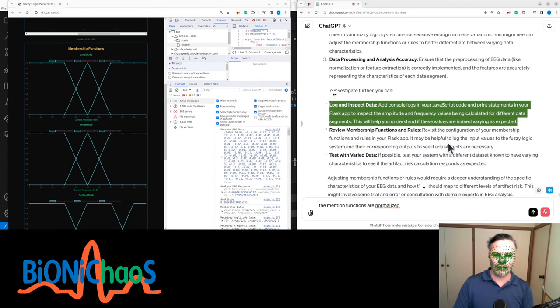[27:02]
To investigate further, you can log and inspect data: add console logs in your JavaScript code and print statements in your Flask app to inspect the amplitude and frequency values being calculated for different data segments.
This will help you understand if these values are indeed varying as expected. Review membership functions and rules. Revisit the configuration of your membership functions and rules in your Flask app. It may be helpful to log the input values to the fuzzy logic system and their corresponding outputs to see if adjustments are necessary. Test with varied data.
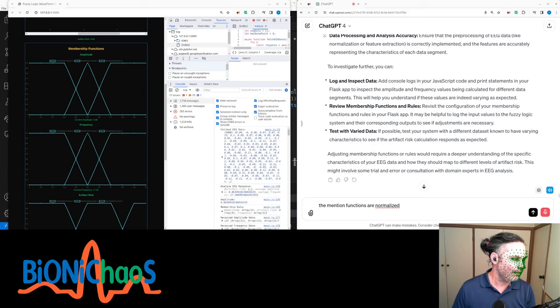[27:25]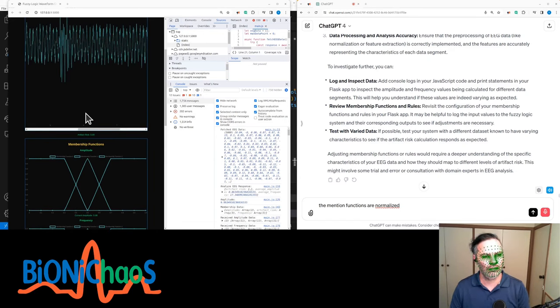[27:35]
If possible, test your system with a different dataset known to have varying characteristics to see if the artifact risk calculation responds as expected. Adjusting membership functions or rules would require a deeper understanding of the specific characteristics of your EEG data and how they should map to different levels of artifact risk. This might involve some trial and error or consultation with domain experts in EEG analysis.
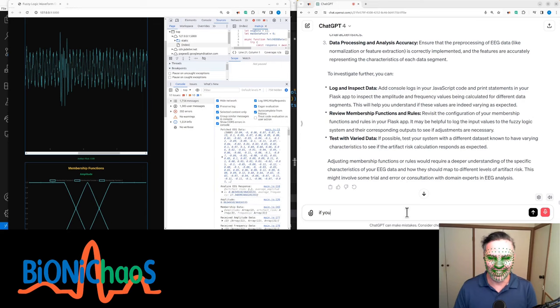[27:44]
If you are a domain expert and you would like to contribute, do contact me. Or contact or prompt the bot directly. That's okay too.
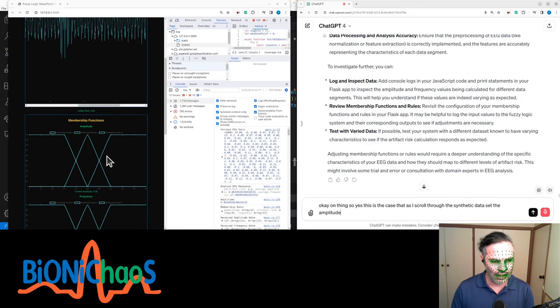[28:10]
Okay, one thing. This is the case that as I scroll through the synthetic dataset, the amplitude doesn't change much. Can we potentially reduce the amplitude of the baseline EEG? The frequency doesn't change much as well. Also, the current frequency is between 16 to 17 hertz, which is outside the range.
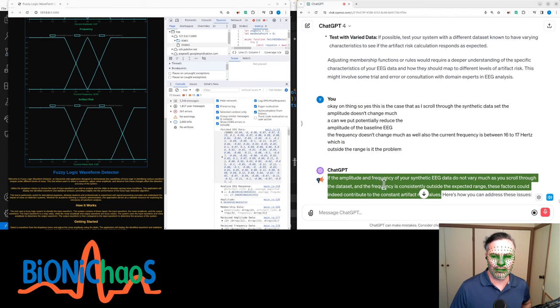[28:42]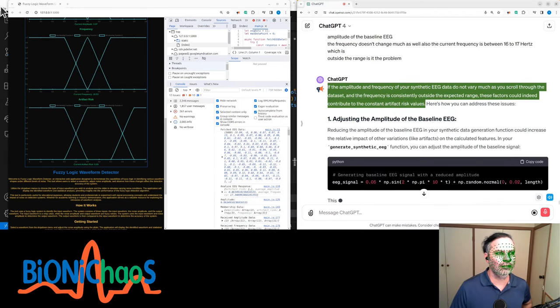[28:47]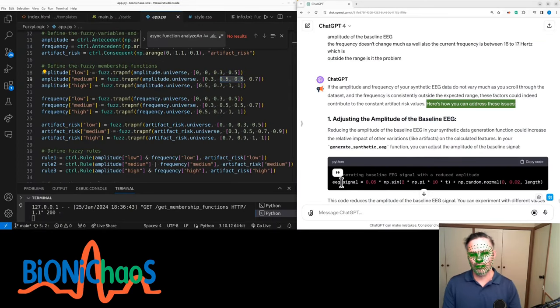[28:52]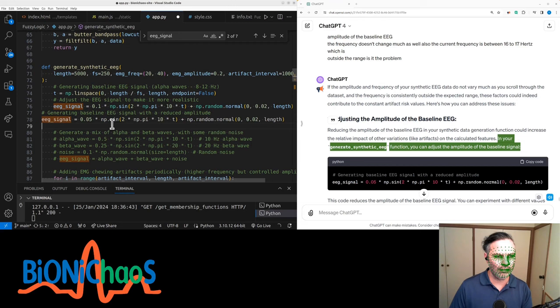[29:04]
Is it a problem? If the amplitude and frequency of your synthetic EEG data do not vary much as you scroll through the dataset, and the frequency is consistently outside the expected range, these factors can indeed contribute to the constant artifact risk values. Here's how you can address these issues. Reducing the amplitude of the baseline EEG in your synthetic data generation function could increase the relative impact of other variations, like artifacts, on the calculated features. In your generate_synthetic_EEG function, you can adjust the amplitude of the baseline signal. This code reduces the amplitude of the baseline EEG signal. You can experiment with different values to find a balance that creates more variability in your data.
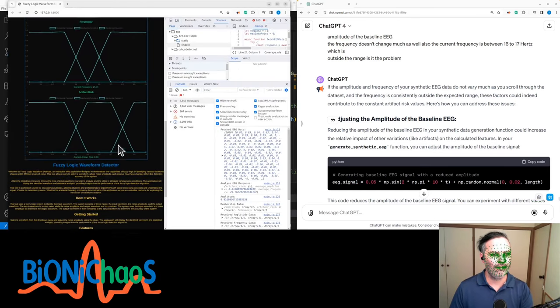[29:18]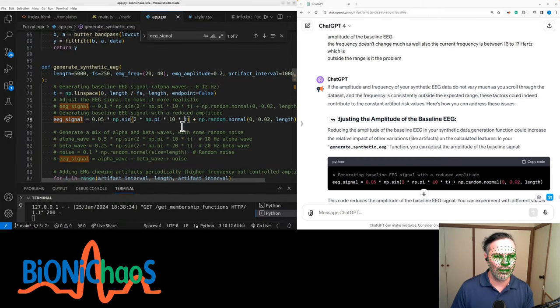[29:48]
If the frequency is consistently outside the expected range, it's important to ensure that your frequency calculation method is appropriate and that your synthetic data generation aligns with the expected frequency range. Frequency calculation: check how you're extracting the frequency feature from the EEG data. Ensure that the method used, e.g., FFT, is appropriate and implemented correctly. Synthetic data generation: adjust the frequency components in your generate_synthetic_EEG function to ensure they fall within the expected range. For instance, if you want to simulate alpha waves, typically 8 to 12 Hz, you can adjust the synthetic signal generation to reflect this.
Python code: adjusting frequency components for alpha waves. EEG_signal = 0.1 * np.sin(2 * np.pi * 10 * t) + np.random.normal(0, 0.02, length) # 10 Hz alpha wave.
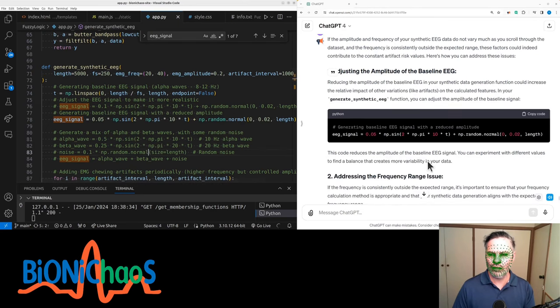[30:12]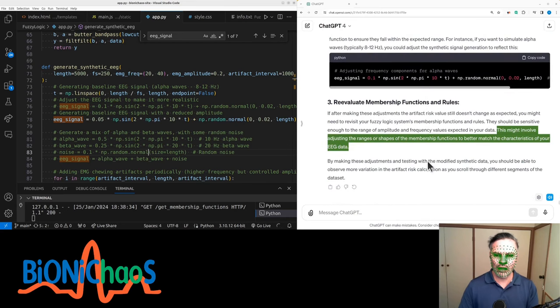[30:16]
If after making these adjustments the artifact risk value still doesn't change as expected, you might need to revisit your fuzzy logic system's membership functions and rules. They should be sensitive enough to the range of amplitude and frequency values expected in your data. This might involve adjusting the ranges or shapes of the membership functions to better match the characteristics of your EEG data. By making these adjustments and testing with the modified synthetic data, you should be able to observe more variation in the artifact risk calculation as you scroll through different segments of the dataset.
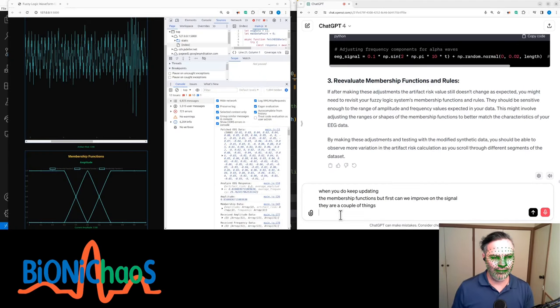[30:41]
We need to keep updating the membership functions, but first, can we improve on the signal? There are a couple of things. If the EMG artifacts are coming every 10 seconds, can we make sure the window displayed on the screen is say 5 seconds? This is to make sure that we have sections displayed without any EMG in them.
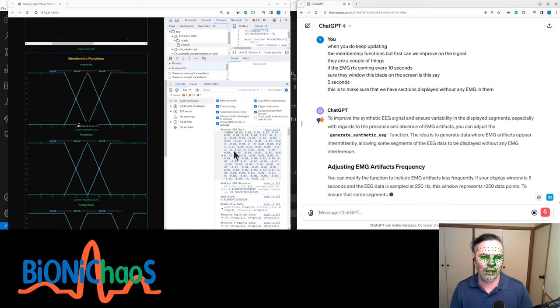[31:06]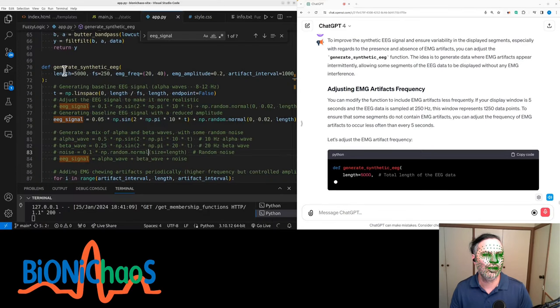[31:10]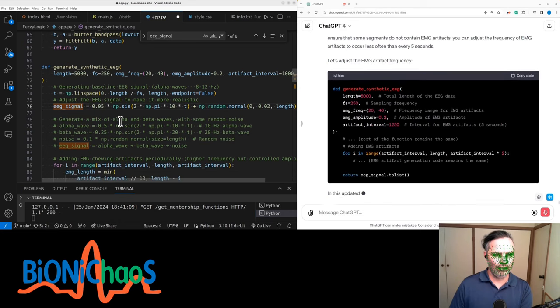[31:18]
To improve the synthetic EEG signal and ensure variability in the displayed segments, especially with regards to the presence and absence of EMG artifacts, you can adjust the generate_synthetic_EEG function. The idea is to generate data where EMG artifacts appear intermittently, allowing some segments of the EEG data to be displayed without any EMG interference. You can modify the function to include EMG artifacts less frequently.
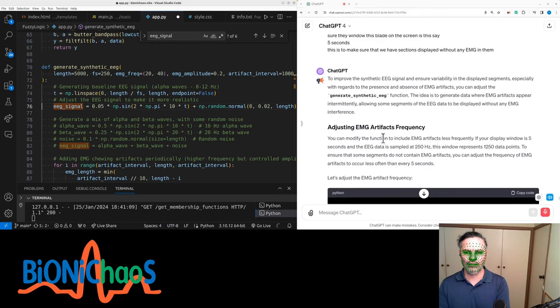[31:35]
If your display window is 5 seconds and the EEG data is sampled at 250 Hz, this window represents 1250 data points. To ensure that some segments do not contain EMG artifacts, you can adjust the frequency of EMG artifacts to occur less often than every 5 seconds. Let's adjust the EMG artifact frequency. In this updated function, EMG artifacts are inserted every 10 seconds, 2500 data points, ensuring that there are segments. Yeah, we'll have to continue this next time.
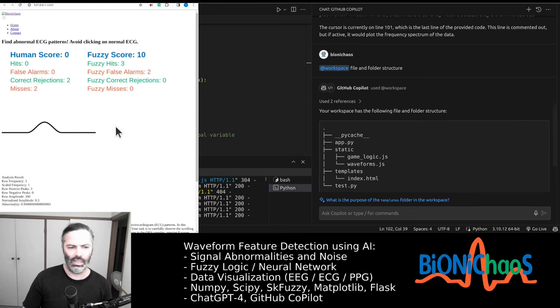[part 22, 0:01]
Yeah, so we have this fuzzy logic web application. It's playing this game for us. It's an ECG detection game. We have this project structure. It will be a Flask application eventually. So the label there suggests we're doing a waveform feature detection using AI, ML.
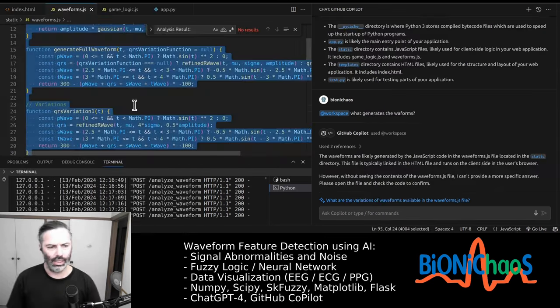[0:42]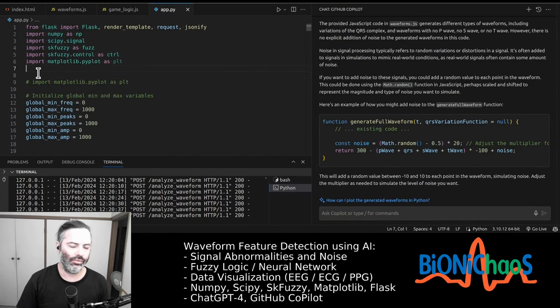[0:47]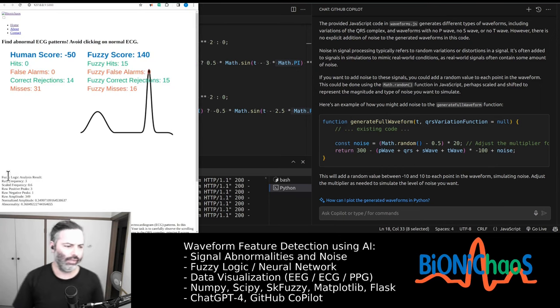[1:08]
So this ECG signal has abnormalities. We could add noise to it as well. We have the waveform.js. We tried to do everything from the math level, from scratch. The waveform generation is basic math JavaScript functions. Currently we're trying to add noise to it, so we can monitor how well the fuzzy logic analysis algorithm is doing.
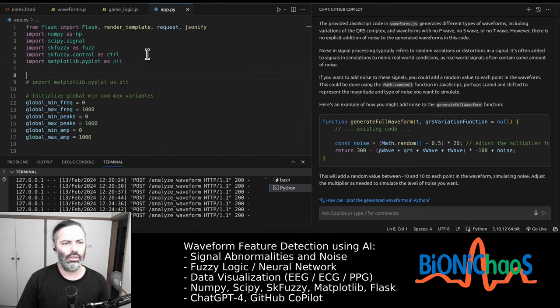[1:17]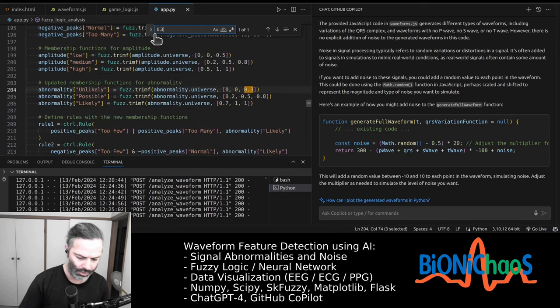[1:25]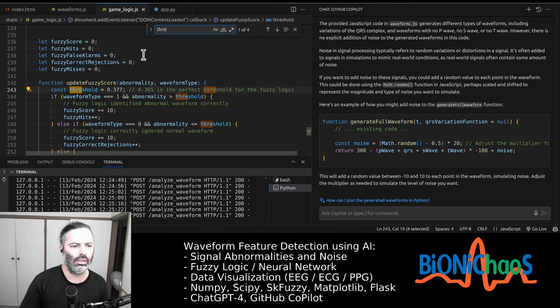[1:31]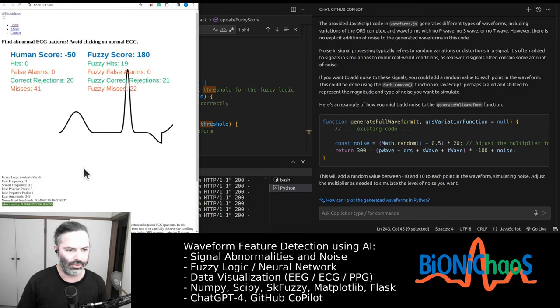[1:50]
Currently I just changed the threshold a bit. The threshold should be 0.3 something. Okay, it was actually in the game logic, that's why I can't find it. Right, the threshold is 0.377, and we also don't like magic numbers, so I'm trying to get rid of any magic numbers. With 0.365, this current algorithm is giving perfect results, but we do not like perfect results. We like for it to make mistakes.
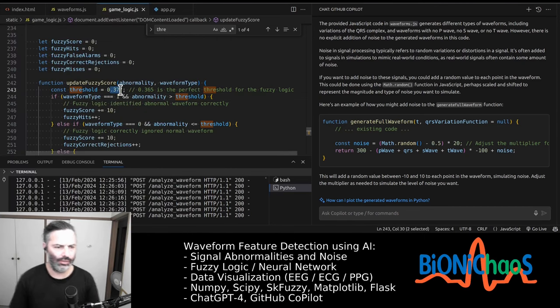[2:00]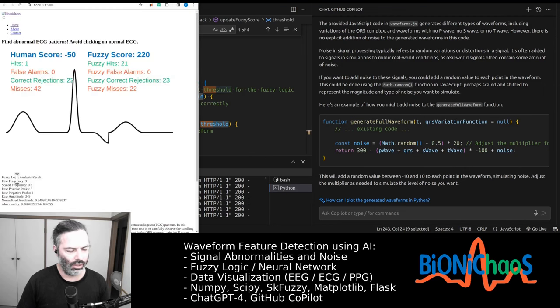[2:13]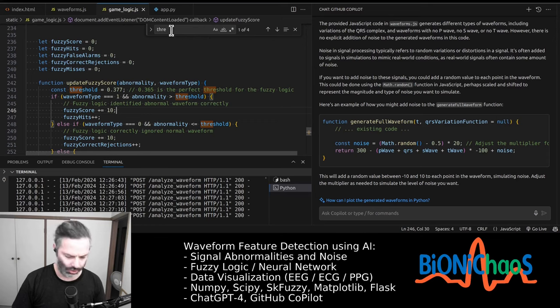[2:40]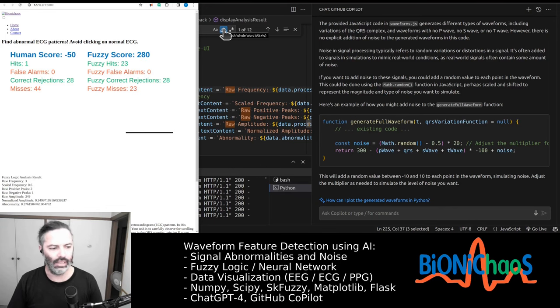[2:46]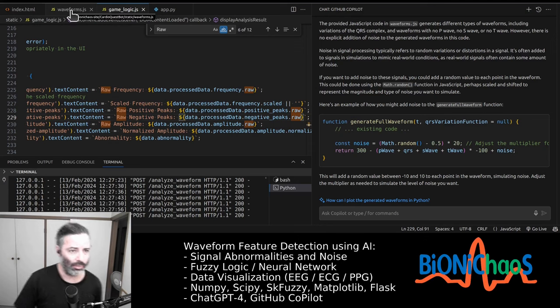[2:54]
Yeah, it's always missing. Currently, if I make this number a bit higher, this is the threshold for the abnormality score that the fuzzy logic algorithm spits out. So the fuzzy logic algorithm looks at the raw frequency, scaling it, and positive peaks. I don't know why it's raw, it shouldn't be, it's just positive peaks, because originally for whatever reason we were scaling them as well, but we don't need to do that. It's just the number of the positive and negative peaks. Just checking, yeah, the raw frequency is just frequency. Okay, that makes sense, because then you have raw and scale. That's fine. So we have four files. We have HTML, JavaScript, the waveform JavaScript that's actually generating the waveforms, and the game logic.
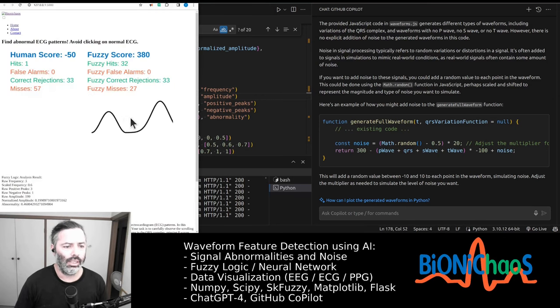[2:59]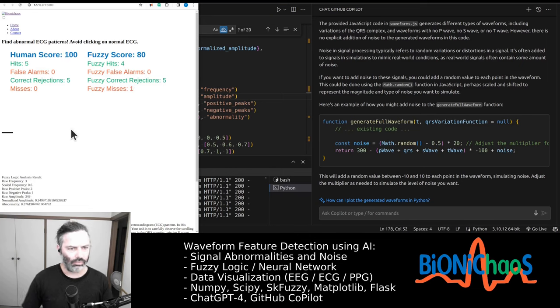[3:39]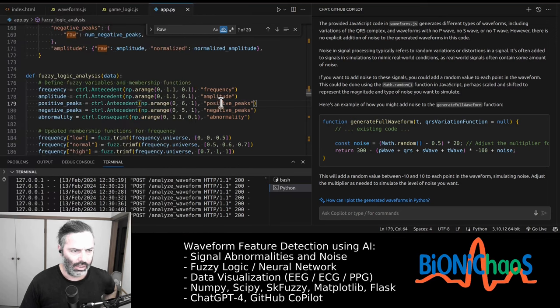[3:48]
So before anyone complains about not being able to beat the robot in detecting and labeling abnormal ECG, just keep in mind that the robot is not cheating. It is just seeing the raw data, just the waveform, nothing else. It's making this decision. It's currently set on purpose to always make a mistake, to miss, because of that threshold. Yeah, made a miss. We can quickly fix that by adjusting this threshold back to 0.365, then it will never make mistakes again.
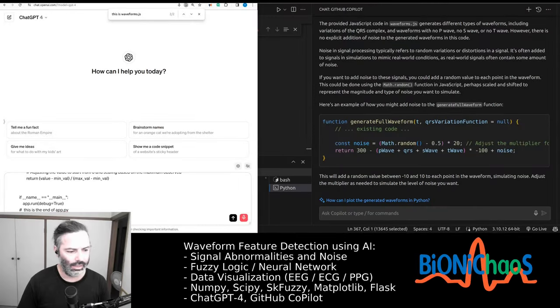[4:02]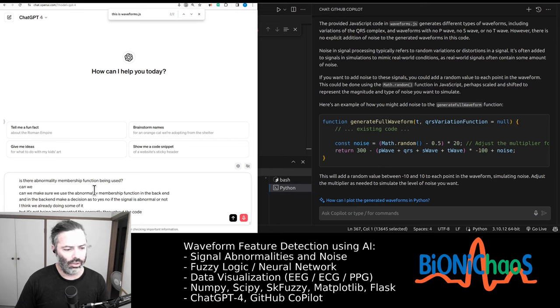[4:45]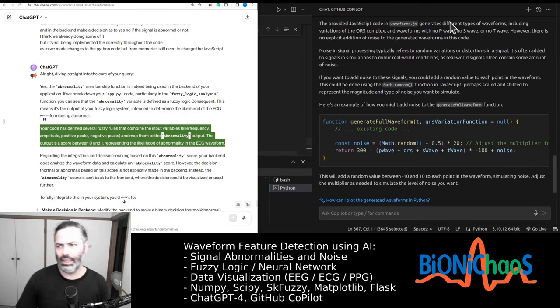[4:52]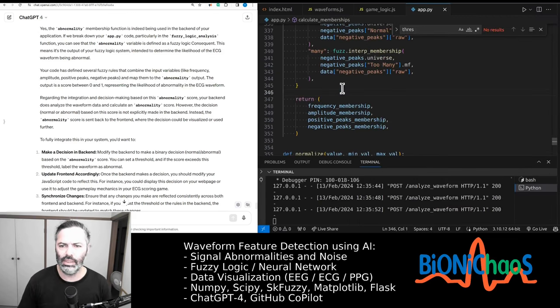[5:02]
Well, where's the membership function for abnormality? It's mentioned 38 times. Oh, that's the main thing. Yes, we have abnormality. It's very convoluted language, isn't it? It's like a double negative or something. Because we're saying it should be normal, like normality, and if it's likely, then it's normal; if it's unlikely, it's abnormal. And in this case, we have the measure for abnormality. So if it's likely or possible, it essentially suggests that the ECG waveform is not normal.
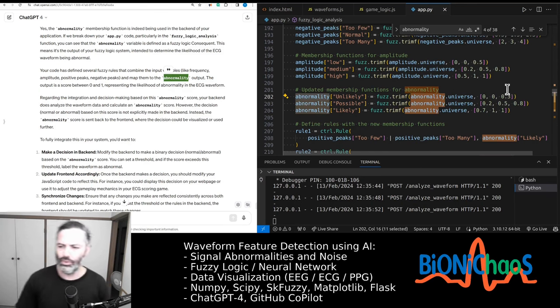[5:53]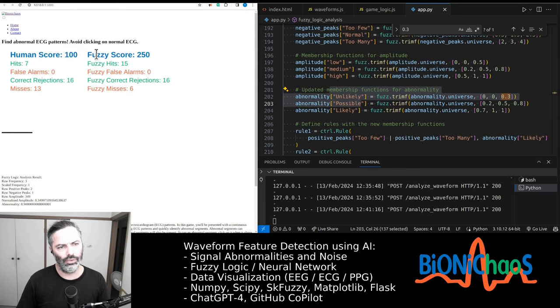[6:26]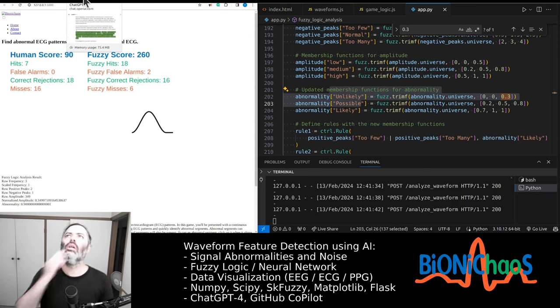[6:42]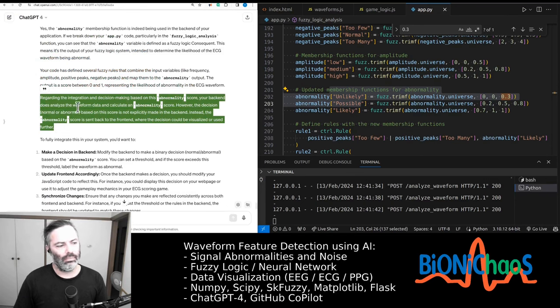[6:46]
And those are the thresholds, except they would not work for the current code, because the lowest it goes to is that magic number of 0.365. That's not cool, is it? So do you think the bot can solve this for us? Yeah, so we don't want to do it at the front end. We want the back end to return the abnormality score, but also return the decision, normal or abnormal, and then we calculate the score. Currently, we use that magic number threshold, which is okay, but not ideal.
Especially if we're trying to use fuzzy logic correctly, everything should be in the form of these membership functions. You can go look them up. There should be a lot of content explaining the basics of fuzzy logic. So to fully integrate this in your system, you will want to make a decision in the backend. That's what we are doing already. So in the three items that you suggested, a couple of things.
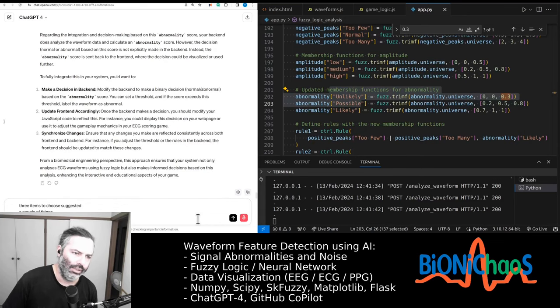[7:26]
Yes, we do want to make the decision in the backend, but we don't want to use a threshold. We want to use the membership function. Now the second item, yes, we want to modify. We want to send the decision as well as the abnormality score to the front end, and we want the decision, the yes, no, normal slash abnormal, to be used to calculate the score.
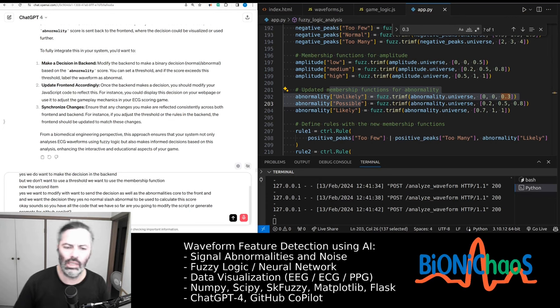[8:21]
Okay, so you have all the code that we have so far. Are you going to modify the script or generate prompts for GitHub Copilot to use? Another problem is the current membership functions for abnormality has a 0.3 threshold for abnormality to be unlikely. The fuzzy logic algorithm returns 0.31 for normal ECG waveform.
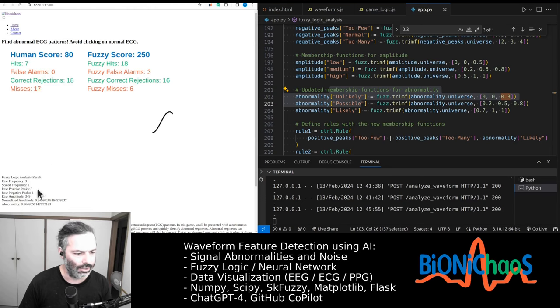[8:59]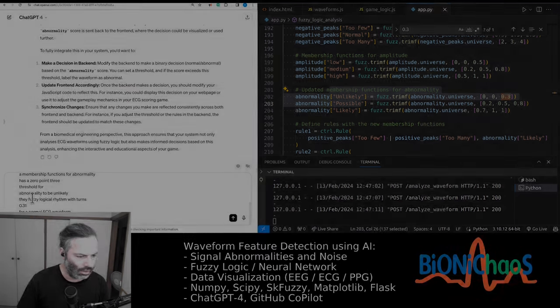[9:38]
Let's double check that. So it returns, okay, 0.56, what? No. It's doing 0.56 all the time. So 0.9 for this one. So it's highly abnormal. Yeah, there's something wrong. Right, 0.37. And 0.36, yeah, 0.37 for this, like essentially slightly abnormal, 0.37 for this one, that's okay, and 0.36049 for normal waveform, fuzzy logic algorithm.
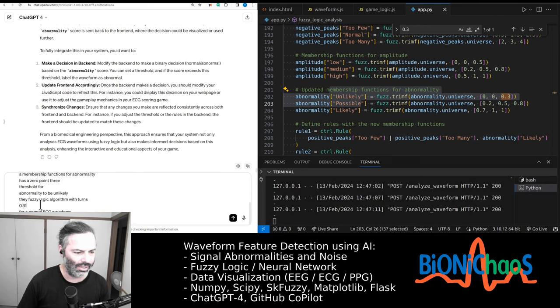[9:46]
That's what I'm struggling with, the transcription thing. It can never get what I say correctly unless I speak like this, but slowly. But even then, certain terminology, it gets incorrect. I imagine those live streams get transcribed by YouTube using the Google API. I have to go and manually correct the text, which is not fun.
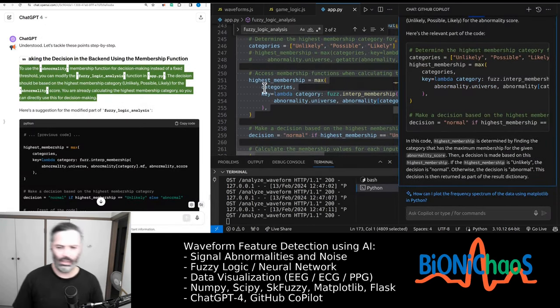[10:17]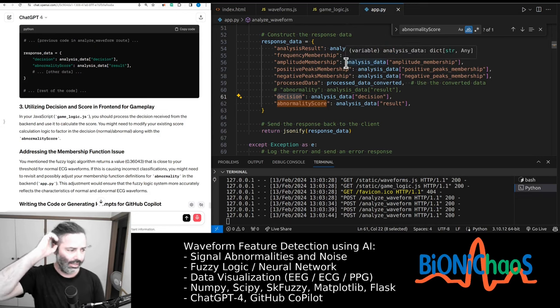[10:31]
And the decision is normal if highest membership equals unlikely, else abnormal. Okay, that's fine. So we're displaying the decision on the front panel, normal or abnormal. Now in JavaScript we haven't gotten rid of this line, and in Python code we need to adjust the membership function so that the magic number is within the normal range.
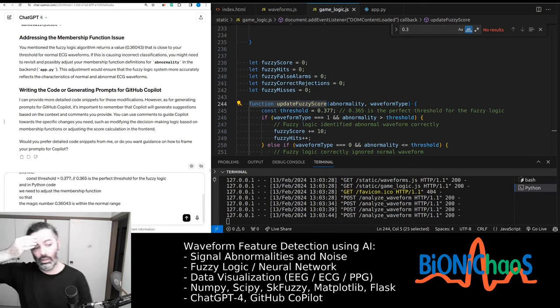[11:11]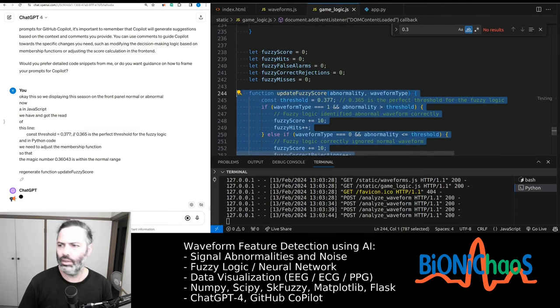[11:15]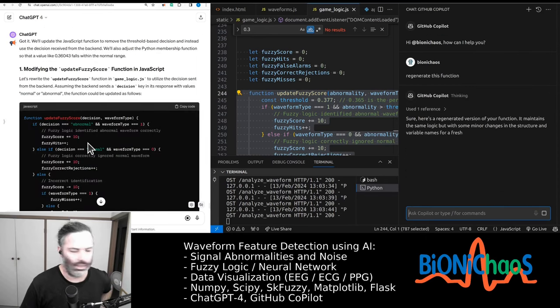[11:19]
Okay, let's actually try doing something ourselves without the bot. No, we will use the bot. So we want to generate this function. Can we regenerate? Okay, it's actually getting it. Let's see. No, GitHub Copilot is no good. What if we select the whole code, the 281 lines of code, and regenerate the update fuzzy score? Nope. Yeah. It didn't have the context.
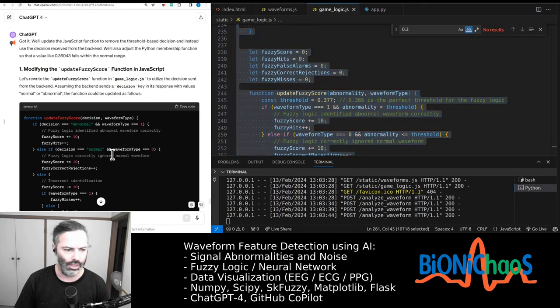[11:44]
Close it for now. This does sound correct. So instead of relying on that function, we want to rely on normal abnormal. Just comment it out for a sec. Copy it again. In your Python app.py file, you need to tweak the abnormality membership function so that a score like 0.36043 falls under the normal category. Here's an example of how you can adjust the membership functions.
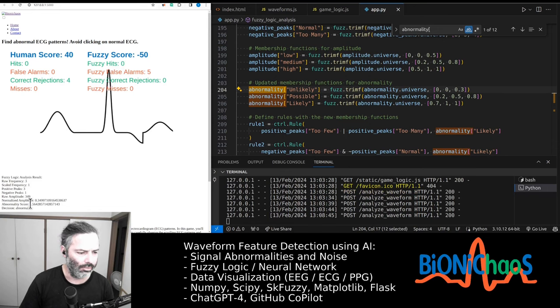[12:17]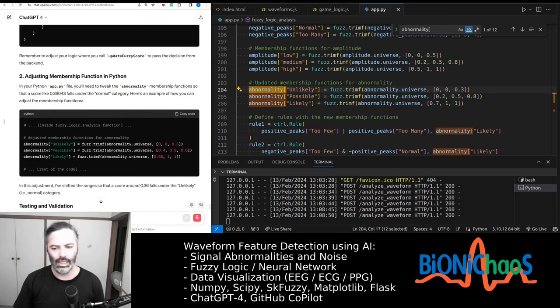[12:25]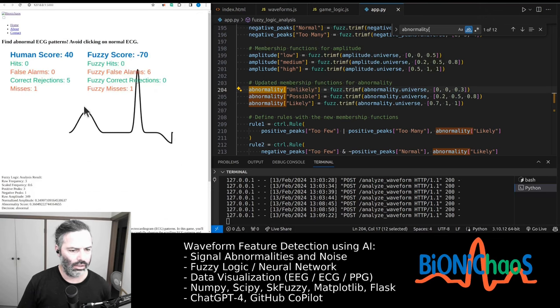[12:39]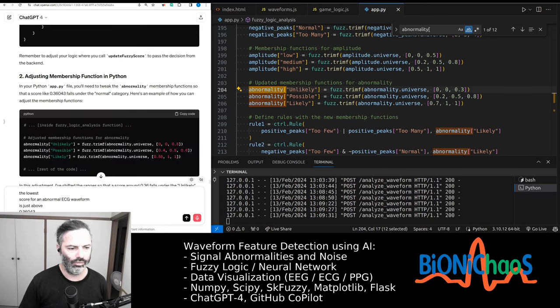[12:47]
Yeah, there's a problem with that. The lowest abnormality score for an abnormal ECG waveform is very close, just above this number, which is a problem because 0.5 will be too high. 0.5 is way too high. Okay, this might be better.
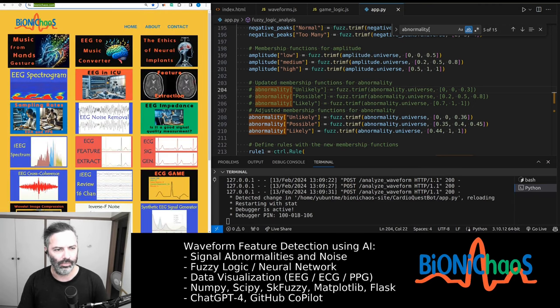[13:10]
There will be overlapping because it's a triangular shape. We're not plotting it at the moment, but probably should. That will require more work. We might later do a general tool. So we'll have a new tool. It will be the ECG bot, the CardioQuest bot. I'll give it another name. If you have any better name suggestions, please do let me know.
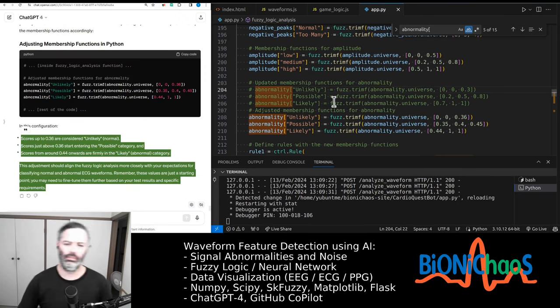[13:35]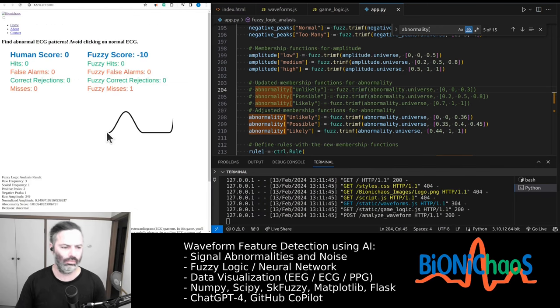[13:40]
And then later we might do a more simple fuzzy logic tool. Scores up to 0.36 are considered unlikely, normal. Scores just above 0.36 start entering the possible category, and scores from around 0.44 onwards are firmly in the likely, abnormal category. This adjustment should align the fuzzy logic analysis more closely with your expectations for classifying normal and abnormal ECG waveforms. Remember, these values are just a starting point. You may need to fine-tune them further based on your test results and specific requirements.
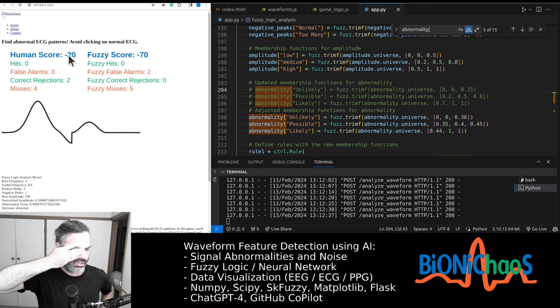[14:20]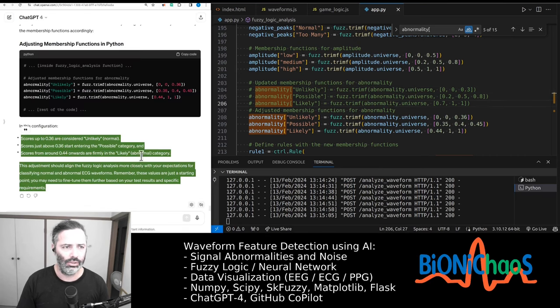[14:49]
Yeah, so in the beginning, it's still adjusting its thresholds, so it's making mistakes. So it went to minus 60 score. The human one said not to go below minus 50. Might change it. Can go negative, it's fine. I think. How the fuzzy logic score is calculated. Okay, we need to adjust this score. So normal is still generating 0.4 now. I don't know why. It's like getting better over time. There's some thresholds that need the adjustment, that are adjusting as we go. Okay, so need to adjust how the score is being calculated.
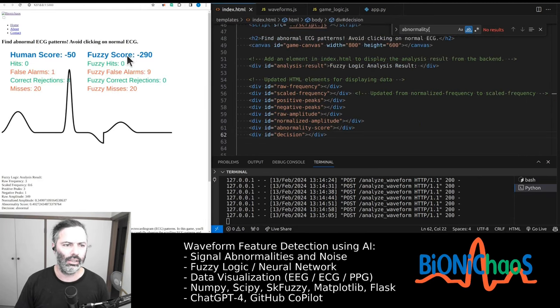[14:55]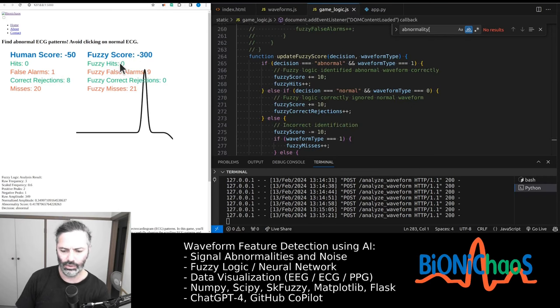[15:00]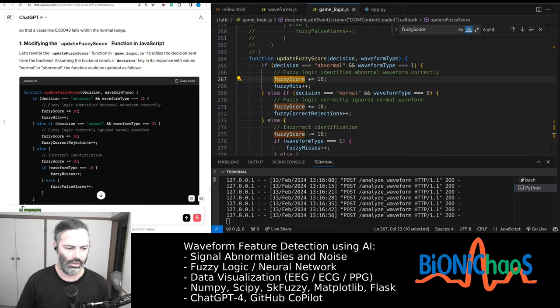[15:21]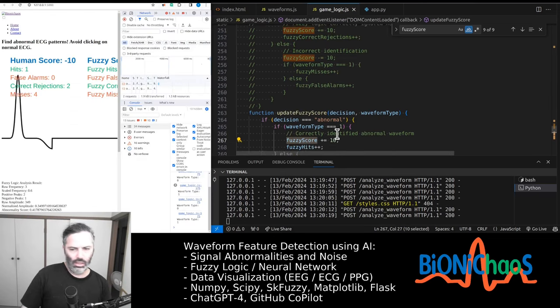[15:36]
Score. Go from HTML quickly. Yeah, you can't select it. It's not actually text. It's being overlaid. The fuzzy score. Okay, it's based on the decision and waveform type. There's something wrong here. I suspect this should be reversed. The fuzzy score seemed to be going in reverse. Can you double check the code you generated? If decision abnormal and waveform type. So 0 is normal, 1 is abnormal.
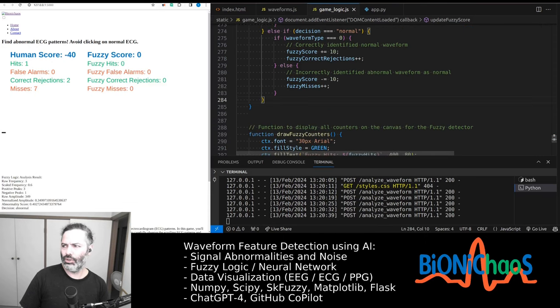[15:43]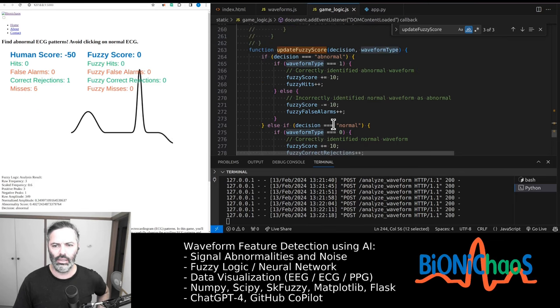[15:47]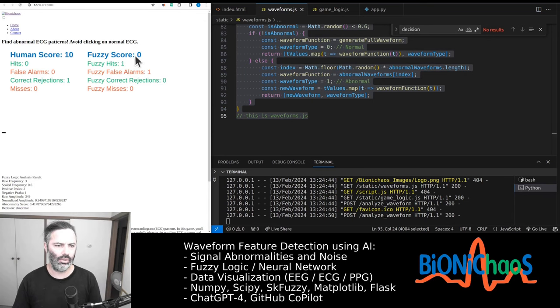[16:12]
Yes. Okay, why is the score not going anywhere now? Score is not going anywhere. There's some silly mistake. Okay, why doesn't it? My GitHub Copilot is not working. It's not completing the code. Oops. Don't understand why GitHub Copilot is funny like that. Taking decision. Yes, that was wrong. It's a false alarm. It's abnormal. It's essentially saying yes to anything, clicking on anything. Should become better over time. So for normal ECG, currently it gives a 0.4, but it actually later goes down to 0.36.
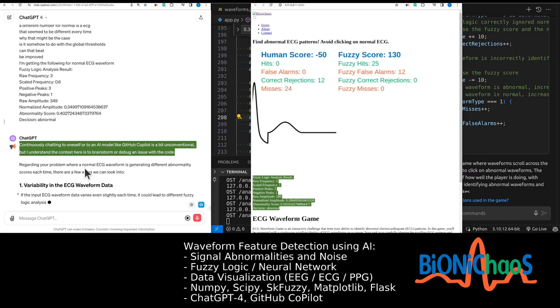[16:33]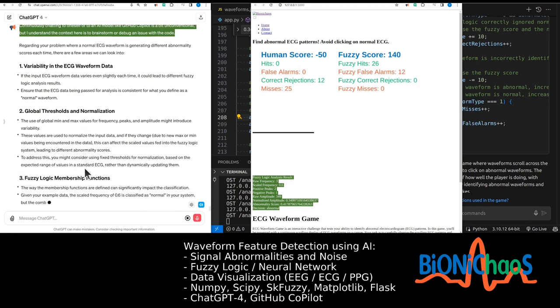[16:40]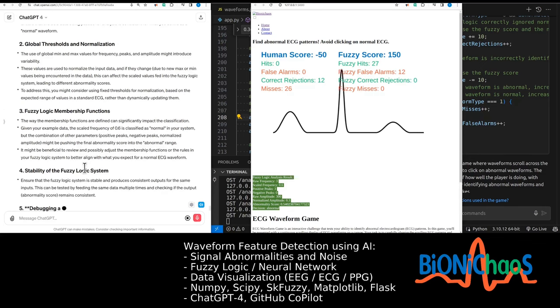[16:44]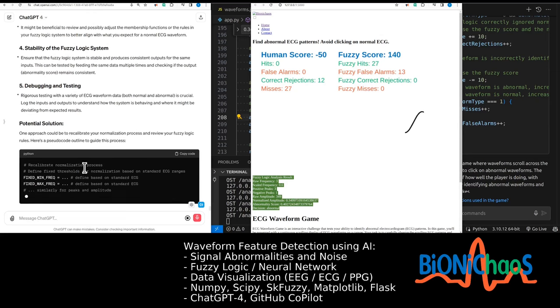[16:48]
Continuously chatting to oneself or to an AI model like GitHub Copilot is a bit unconventional. But I understand the context here is to brainstorm or debug an issue with the code. Regarding your problem where a normal ECG waveform is generating different abnormality scores each time, there are a few areas we can look into. If the input ECG waveform data varies even slightly each time, it could lead to different fuzzy logic analysis results. Ensure that the ECG data being passed for analysis is consistent for what you define as a normal waveform. The use of global min and max values for frequency, peaks, and amplitude might introduce variability.
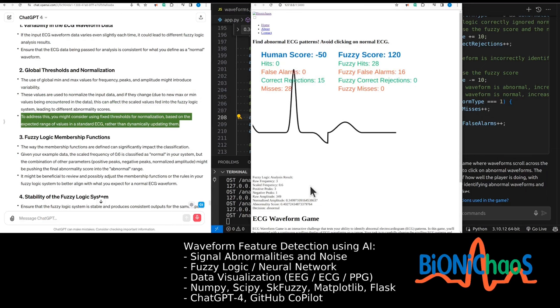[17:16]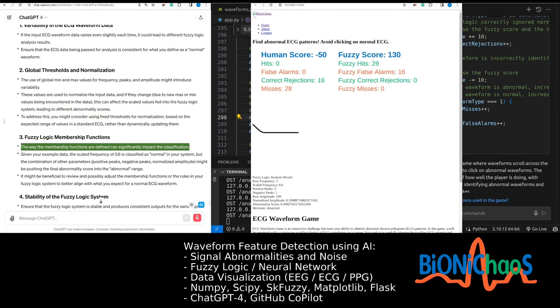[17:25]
These values are used to normalize the input data, and if they change due to new max or min values being encountered in the data, this can affect the scaled values fed into the fuzzy logic system, leading to different abnormality scores. To address this, you might consider using fixed thresholds for normalization, based on the expected range of values in a standard ECG, rather than dynamically updating them. The way the membership functions are defined can significantly impact the classification. Given your example data, the scaled frequency of 0.6 is classified as normal in your system, but the combination of other parameters, positive peaks, negative peaks, normalized amplitude, might be pushing the final abnormality score into the abnormal range. It might be beneficial to review and possibly adjust the membership functions or the rules in your fuzzy logic system to better align with what you expect for a normal ECG waveform.
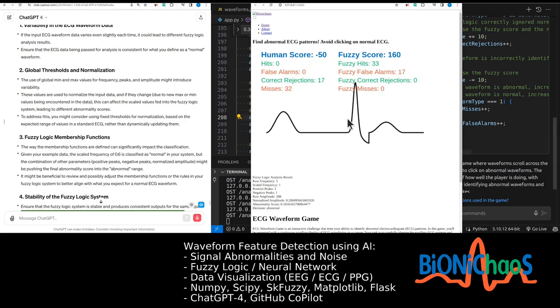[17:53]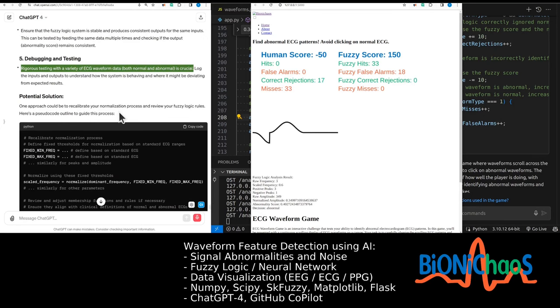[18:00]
Ensure that the fuzzy logic system is stable and produces consistent outputs for the same inputs. This can be tested by feeding the same data multiple times and checking if the output, abnormality score, remains consistent. Rigorous testing with a variety of ECG waveform data, both normal and abnormal, is crucial. Log the inputs and outputs to understand how the system is behaving and where it might be deviating from expected results. One approach could be to recalibrate your normalization process and review your fuzzy logic rules. Here's a pseudocode outline to guide this process. This approach focuses on reducing variability introduced by dynamic thresholds and aligning the fuzzy logic system more closely with clinical standards. Remember, fine-tuning a system like this can be iterative and may require several adjustments based on testing results.
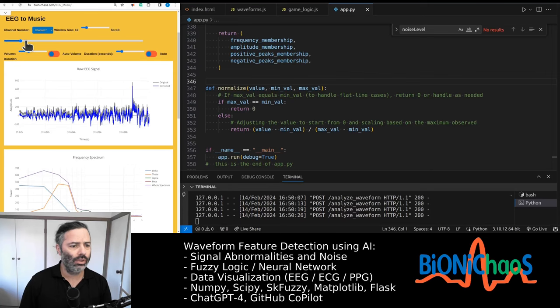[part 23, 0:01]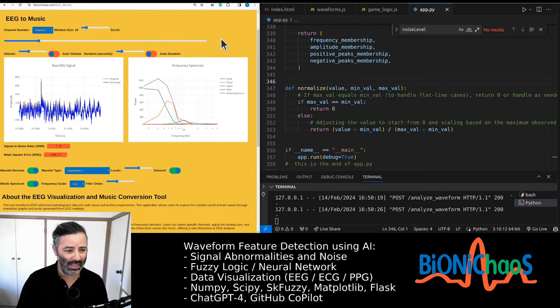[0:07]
That's what the EEG sounds like. Originally, the idea was to have a play button. Anyway, when you have auto volume and auto duration, the duration is pretty simple. It will adjust based on the current window size. So if you have a longer window size, the sounds will be longer as well.
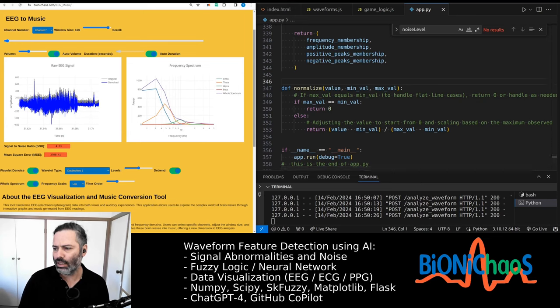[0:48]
The whole file is a bit buggy and laggy. When you scroll through the file, it becomes a bit less responsive.
When you load the page, it defaults to channel 7. One of those last channels was a bit more annoying, or more festive, depending on how you look at it. The auto volume, let's go back to 7.
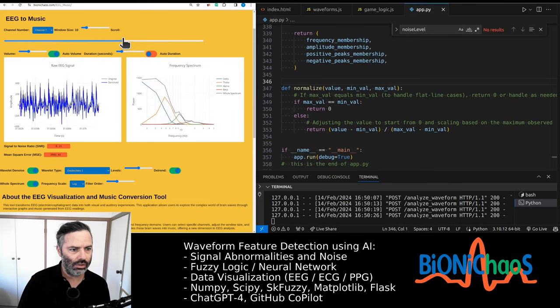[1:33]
If you select auto volume, it will be quieter when there is no seizure and start being louder when the seizure comes through. So this is in the middle of the seizure, and this is the end of the seizure. I don't know if you can still hear anything, but the auto volume will adjust itself to amplitude. It's actually meant to be grayed out, so it's all prototypy like that.
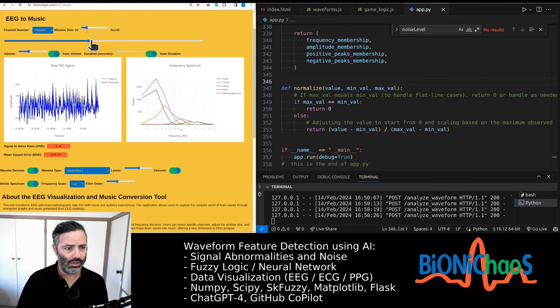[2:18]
When you turn it off, it just maintains the volume to be roughly the same throughout the recording. So it doesn't matter if it's seizure or after seizure. So obviously auto volume is kind of better. And again, as I said, auto duration adjusts to the current window size.
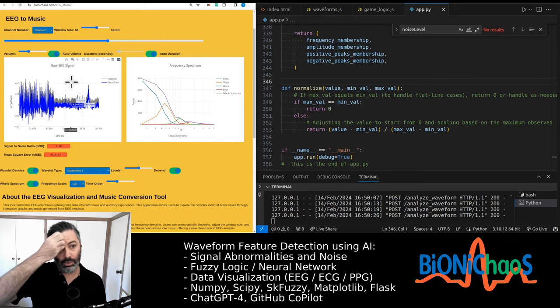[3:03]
With a window size of 10 seconds, the sound is shorter. If you make the window size 50 or something, the notes will be longer, but then it becomes a bit laggy because too much data is being loaded here, and it's mostly happening in JavaScript. There is a back end to it as well, and next time we modify this tool, we will push things as much as possible to the front end.
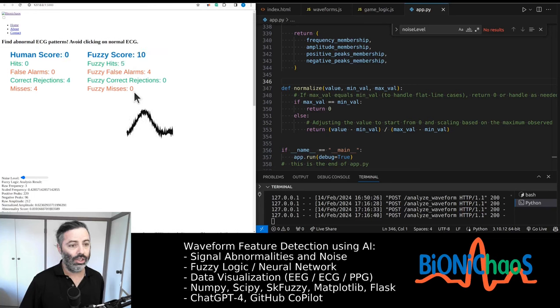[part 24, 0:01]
ECG labeling game, we added an option to add noise. By default there's some minimal amount of noise. If you move the slider all the way to the right, you get a lot of noise, so the QRS complex is barely visible. And in this case, we expect the bot to start making more mistakes.
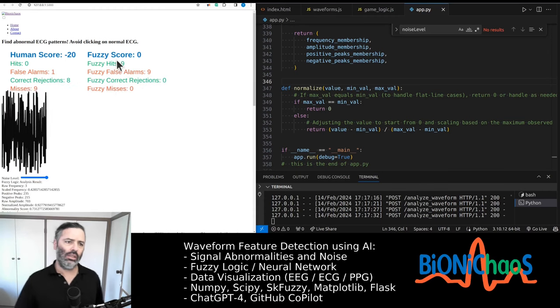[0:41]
I wouldn't know which one it is. The bot seemed to be struggling as well. Yeah, it's creating all these false alarms. That's because it keeps clicking on everything. So I wouldn't know which one of those waveforms is an actually normal ECG waveform. The abnormality score remains 0.73. So it's labeling everything as abnormal.
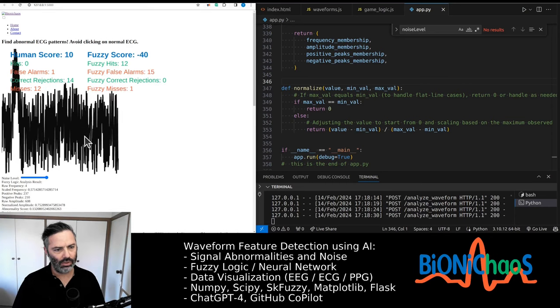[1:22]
So it keeps essentially clicking on everything, as if it was a human doing the task. And when there is a hit, it clicked correctly on an abnormal waveform. When it's a false alarm, this means this is a normal waveform. That's just how it looks. Yes, a human won't be able to recognize it, but the bot is not able to recognize it either. But once we start reducing the noise level, let's say put it
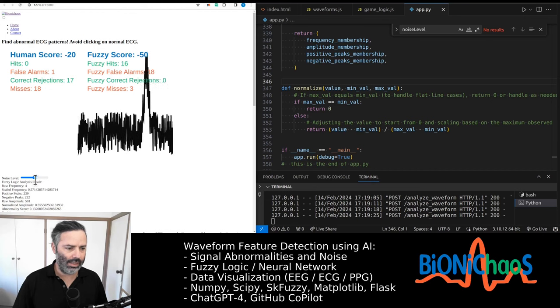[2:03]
halfway, got another false alarm, I can barely tell still. I think for a human it will still be above a threshold in terms of being able to detect if this waveform is normal or not. Yeah, it keeps making mistakes. Okay, if we reduce noise entirely, this would be a normal, and it says abnormal. I don't know why. Hopefully next time it gets the same waveform, it gets it correct.
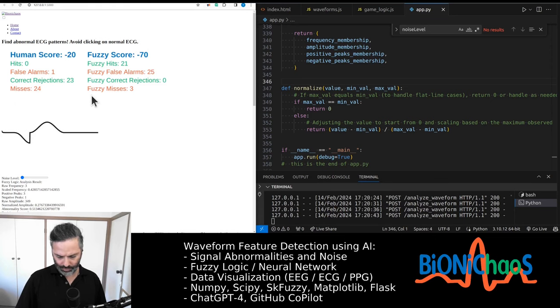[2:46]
Yeah, this is wrong again, but the number is reducing. It's 0.51. Okay, it's not doing very well, is it? Yeah, I would expect this number to go lower over time. There's something to do with the thresholds. We were receiving something like 0.3, 0.4 last time for a normal ECG, but we don't get that anymore. It's a bit unusual. Can start it over again, see how it does. Yeah, we expect that 0.51 for a normal ECG to be slightly lower, to be, well, below 0.5 for sure.
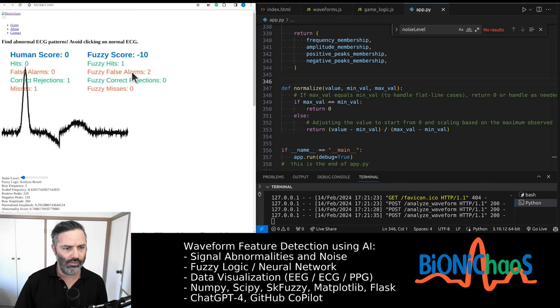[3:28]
So let's start again. We have this minimal noise on the ECG waveform. We get 0.7 for an abnormal wave and 0.7 for a normal one. So we still get a false alarm for it. Yeah, it's really not doing well with the noise. 0.7. Yeah, I keep getting false alarms. So essentially labeling a normal waveform as abnormal. That's no good. I don't know if it will go any lower. I assume this is the noise throwing the algorithm off. I have to check, probably without any noise at all.
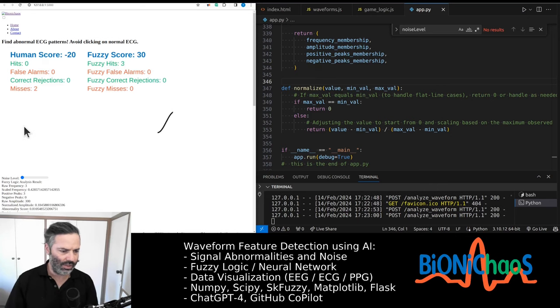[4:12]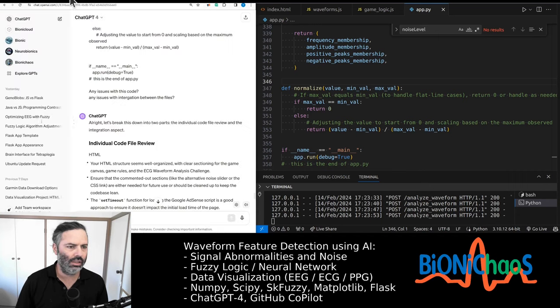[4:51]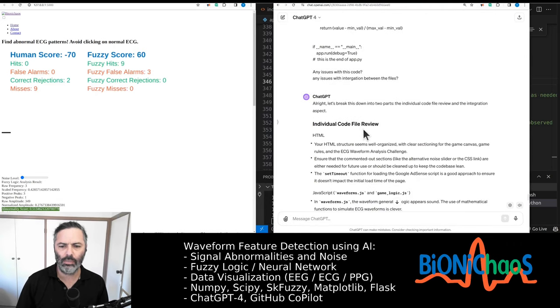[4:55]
Yeah, we get a very high number for a normal ECG, so it's labeling it as abnormal. Okay, so we get 0.59 for this one, which is obviously abnormal, and it's labeling it correctly. 0.8 for that one, which is missing a negative peak, which is fine. 0.7 for this one that is missing the first positive peak. We get a 0.51 now for a normal waveform, but it's not low enough to be labeled correctly by the algorithm. I suspect the thresholds might not be correcting themselves. So they like saturated at something.
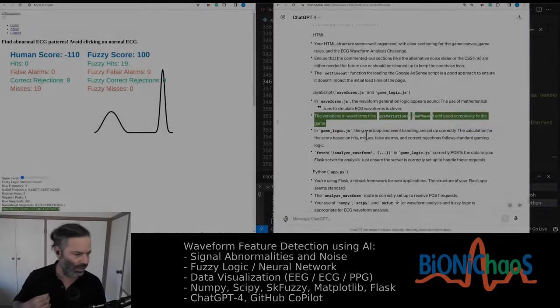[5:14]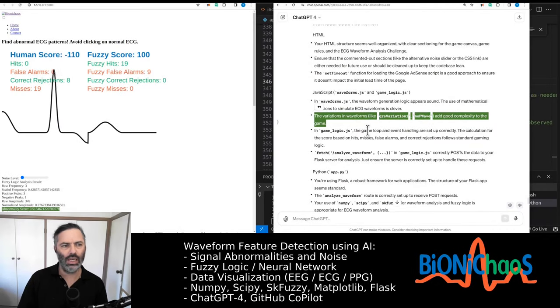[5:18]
So we popped all this code into GPT-4. Let's break it down into two parts, individual code file review and the integration. Yeah, I'm more worried about the integration, but let's go over it one by one. Yeah, we might later add actually more waveform types. Those are generated in JavaScript. It's probably important to note that the waveforms are only generated in JavaScript, whereas the fuzzy logic, the bot, is working in the background, so in the backend. So the bot cannot possibly cheat because it's only seeing the raw data. It doesn't know how the data was generated, so it doesn't have the labels for which signal is what.
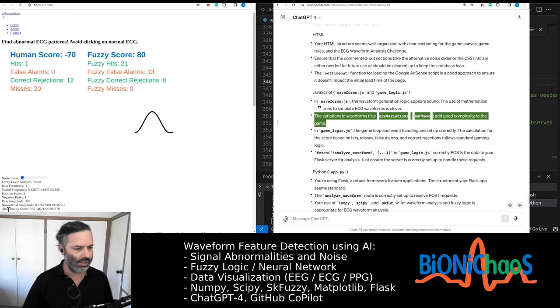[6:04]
Currently, we still have trouble with this 0.51 value, which is too high. It should be at least below 0.5 for the abnormality score, for the decision to be correctly, say, normal for a normal ECG wave. We can artificially correct it, but we don't want magic numbers. We want a permanent solution for this.
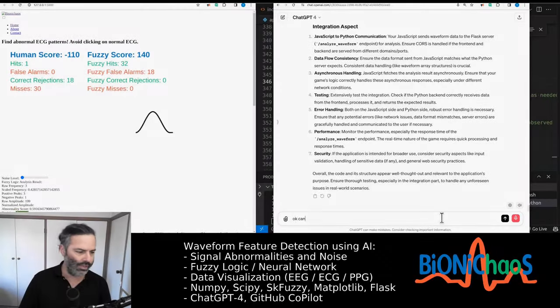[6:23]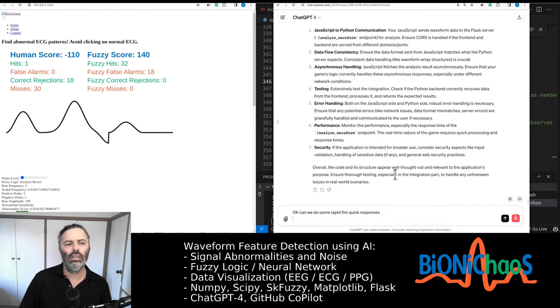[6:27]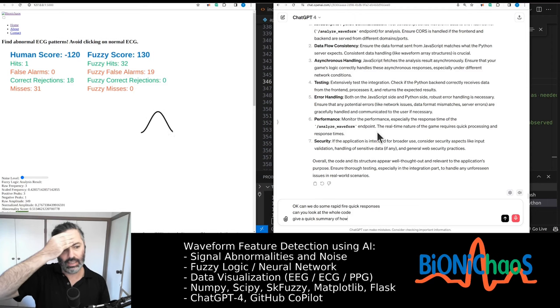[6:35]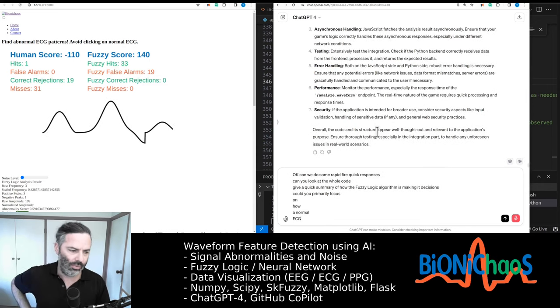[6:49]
Okay, can we do some rapid fire, quick responses? Can you look at the whole code? Give a quick summary of how the fuzzy logic algorithm is making its decisions. Could you primarily focus on how a normal ECG waveform is being detected? The reason I'm asking is that for a normal ECG waveform, I'm getting an abnormality score that seemed to be slightly too high. How can we fix this?
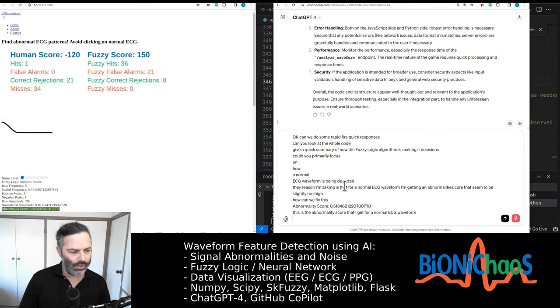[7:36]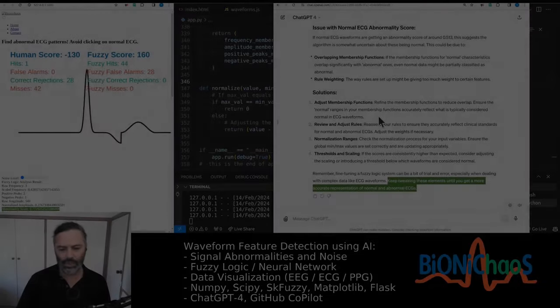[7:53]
Let's actually grab the number. 0.8 abnormality score for this, which is fine. Looks almost normal, but it doesn't have any negative peaks. That's why the score is elevated. That's okay. This is the abnormality score that I get for a normal ECG waveform. There could be an issue with the range of values. So the problem is that they don't go low enough. Are they meant to be between 0 and 1? Okay, we don't want to be tweaking them.
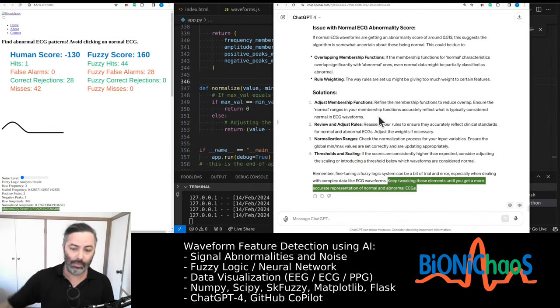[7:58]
I know most people with machine learning algorithms just keep tweaking everything. The rules are meant to just make sense. Okay, regards the solution, can you look at the code provided, look at the membership functions, and suggest how to refine the functions to reduce overlap?
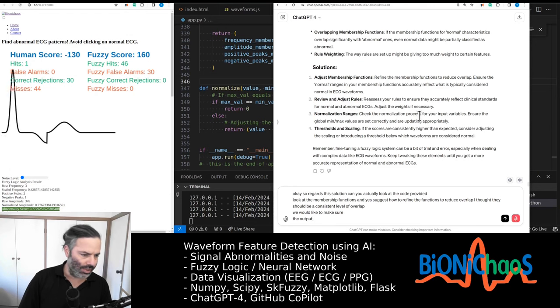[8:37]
I thought there should be a consistent level of overlap. We would like to make sure the output, what's called the abnormality score, goes all the way to 0 or close to 0. Regards the rules, can you check if we are currently using any weights? I don't think so.
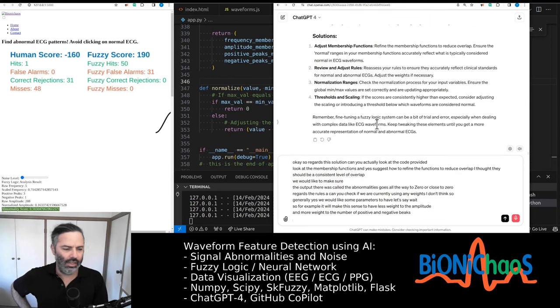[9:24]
Generally, yes, we would like some parameters to have less weight. For example, it will make sense to have less weight on the amplitude and more weight on the number of positive and negative peaks. The frequency should also be lower weight.
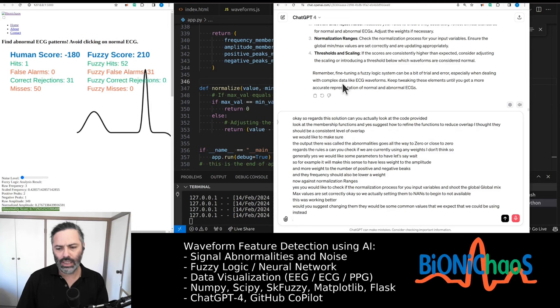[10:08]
Now, regards normalization ranges, yes, we would like to check if the normalization process for your input variables ensures the global min max values are set correctly. We are actually setting them to NaNs to begin with, to not available. This was working better. Would you suggest changing them? There would be some common values that we expect that we could be using instead. This seemed to make a lot of difference.
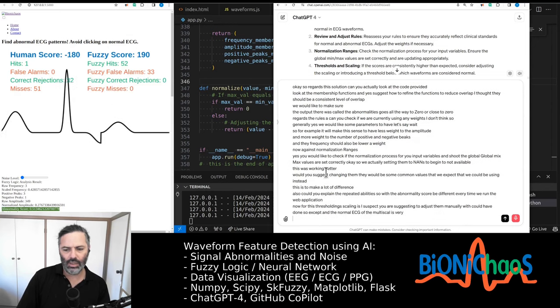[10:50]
Also, could you explain the repeatability? Would the abnormality score be different every time we run the web application? Now, for the threshold and scaling, I suspect you are suggesting to adjust them manually. We could have done so, except the normal ECG abnormality score is very similar to the value for one of the abnormal waveforms. We would like to fix that.
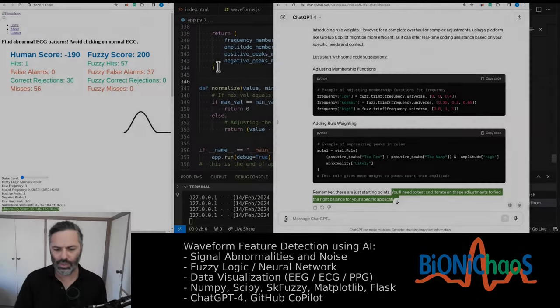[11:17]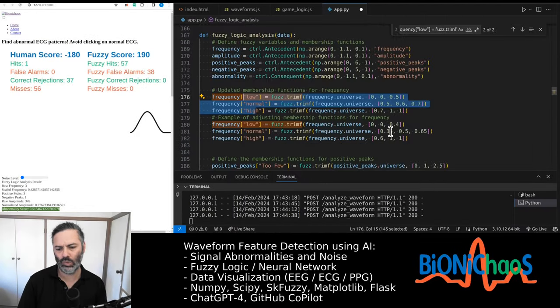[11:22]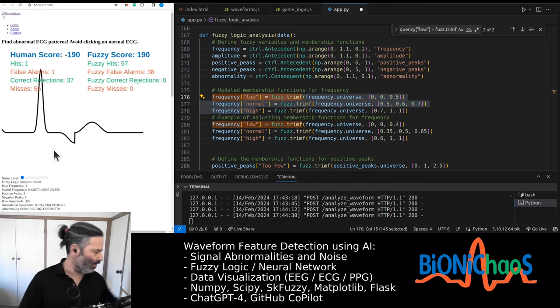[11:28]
Now, main question, the usual question: are you going to be generating the code or do you prefer to provide prompts for GitHub Copilot to use? What do we currently have for frequency? Yeah, the problem with frequency is that we only essentially have two values. Let's write that down quickly: 0.513, 0.513.
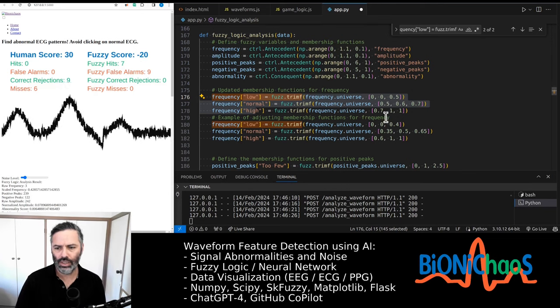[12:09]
Let's just reload the tool so it's faster as well. Yeah, that level of noise should not impact the result too much. Now it's 0.76. And when you remove noise, we expect this number to go lower, 0.513. Yeah, it's that same 0.513, 0.7775. Yeah, that's for normal. Well, at least it's behaving as expected.
Yeah, I'm not sure this will necessarily help. The problem with the frequency, we have 3 or 5. Well, it kind of makes sense because it's a single waveform, a single PQRST complex, so there's not much variability in it anyway. So I think when we have all the positive and negative peaks, I thought this number should go to 5. Or is it only happening when there's no noise? So this will generate a frequency of 3, which is normalized to 0.4 and still 3.
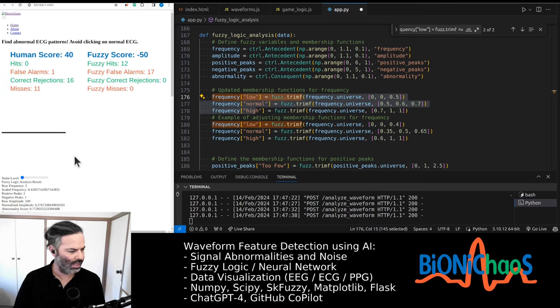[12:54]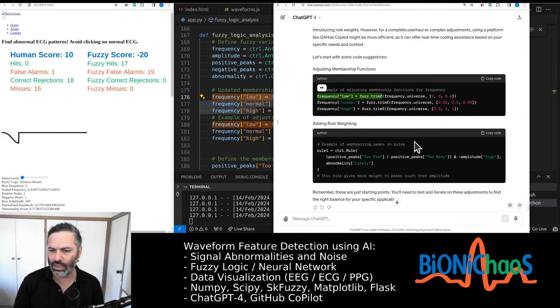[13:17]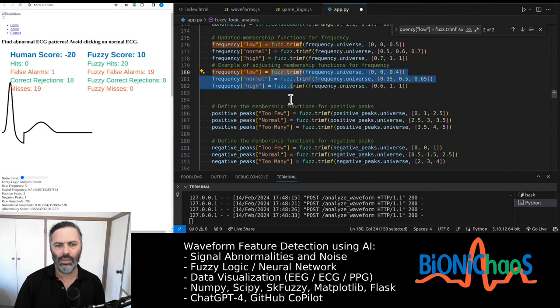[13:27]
Might be something wrong in terms of when the noise is added and then being removed. Yeah, the scaling might be doing something funny because now it went to 5. Yeah, I don't think this will do much. I don't even know why it's suggesting that. Now, rule weighting, yeah, that will be more likely to help.
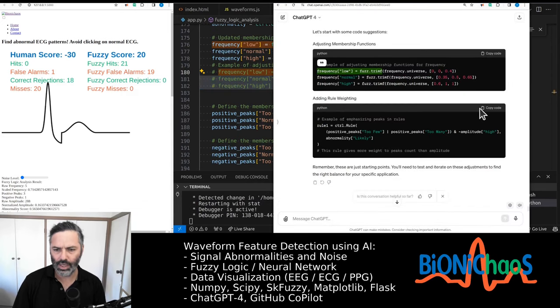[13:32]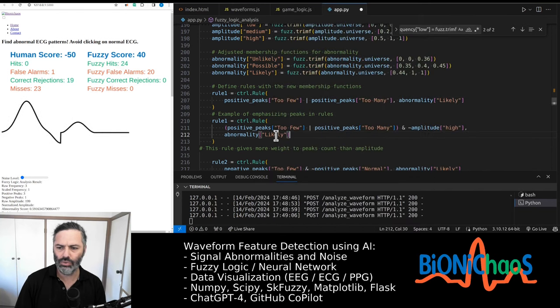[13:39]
We won't do that for now, just keep it there. So, rule one, this rule gives more weight to peaks count than amplitude. That I expect to actually make a lot of difference. Let's restart this quickly. Yeah, we receive a 0.8 for the first one, then 0.1. Yeah, so now it's doing much better. So that suggestion helped. Let's get Copilot to explain this quickly.
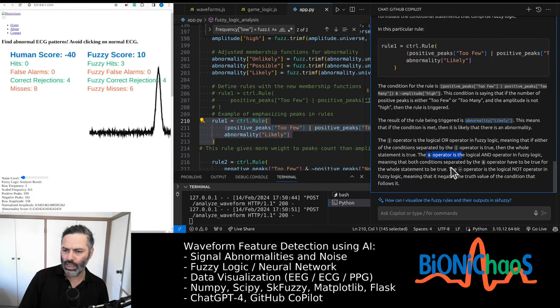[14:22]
The condition says that the number of positive peaks is either too few or too many, and the amplitude is not high, then the rule is triggered. The operator, yes, we have OR, meaning that if either condition is true, and then we have the AND operator, yeah, that's fine. Both have to be true for the whole statement to be true. This operator is the logical NOT operator in the fuzzy logic gates. Why are we negating that?
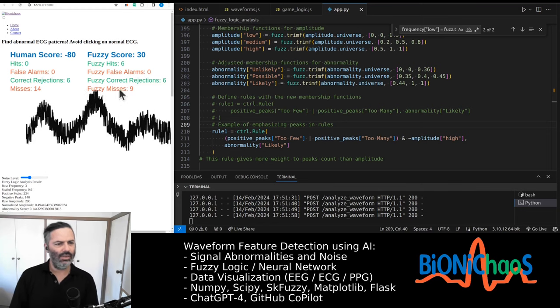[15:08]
Ah, right, we actually changed the rule entirely. Originally it was positive peaks too few or too many, but then we're also adding that amplitude is too high. Yeah, we could add low as well, but this seemed to be working much better. Let's see in theory when we add more. Ah, right, it already did 9 misses as it was, and now it's misbehaving.
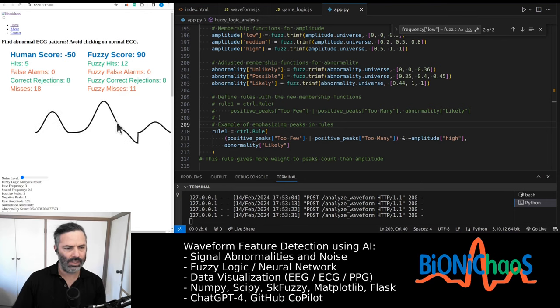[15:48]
Let's see if we reduce the noise all the way to 0. Right, it's labeling this one as abnormal. We expect the false alarms and the red ones, misses and false alarms, to remain at what they are, 0 and 11, not to go any higher. Yeah, the higher this abnormality score, the more abnormal the ECG waveform is. Right, so it's doing well, and then you can see how by increasing the noise, the robot starts making more and more mistakes. So hopefully this is a useful tool to learn how fuzzy logic can be used in biomedical data signal feature detection.
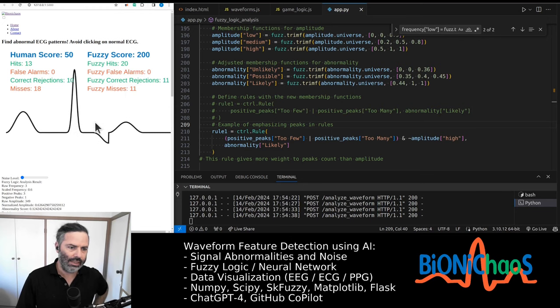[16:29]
Yeah, we get a very low number at 0.12 for a normal ECG, which is what we want, and that was achieved just by tweaking the rules. This is normal, you get 0.12. On the other hand, I had a video telling how much better the bot is.
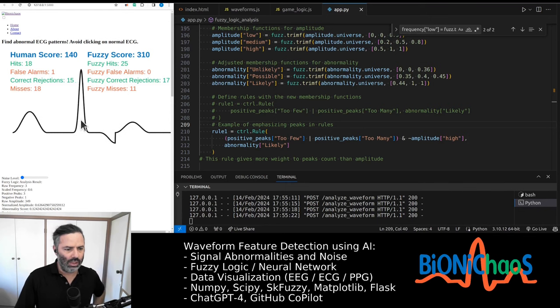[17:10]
On the other hand, if you have both humans, instead of turning it into a competition like over here, we can give this abnormality score to the human expert to help the decision making. So now, in addition to looking at the waveform, I can also look at the abnormality score that the machine learning algorithm is providing. I can make a better decision. If this abnormality score is slightly elevated, then I can pay more attention.
So currently the bot doesn't seem to make any mistakes. The 11 misses were there when we increased the noise level. So now the real question, and another very interesting thing to do, is to see how human and machine compare when there is noise added to the signal. If we add a little bit of noise, I can tell that's abnormal. It's actually harder for me to tell if something is normal. Let's see if the machine will start making mistakes.
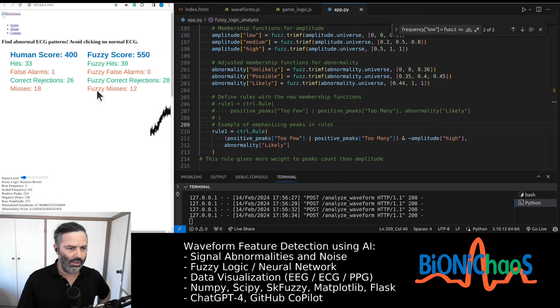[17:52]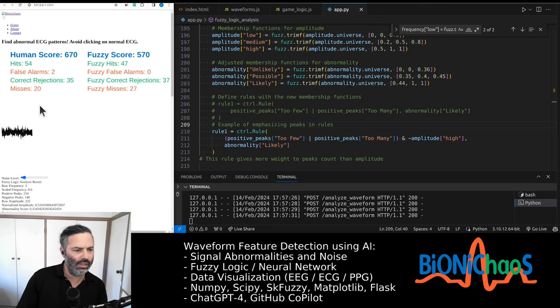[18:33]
Yes, so it missed one signal. Yeah, it keeps doing misses. So I actually have a chance now. Interestingly enough, when noise is introduced to the waveform, I'm still able to do the task, and the machine starts making mistakes. This is an interesting case, where I'm actually winning against the machine when the noise is elevated. That's getting faster as well. Yeah, humans tend to get distracted. That doesn't help. But the bot is making a lot of mistakes, so the algorithm needs to be tweaked.
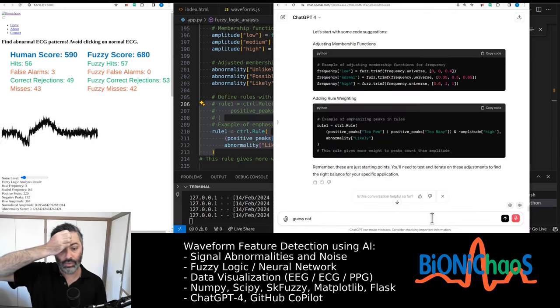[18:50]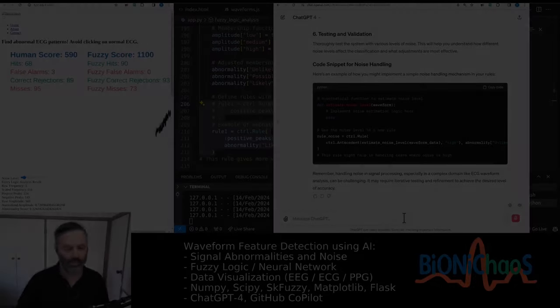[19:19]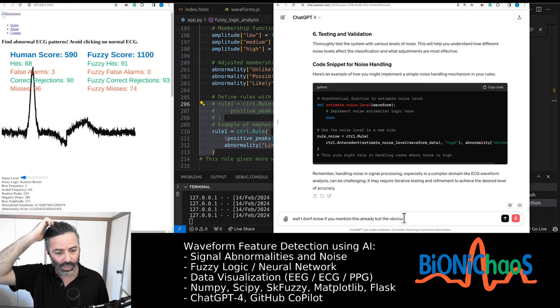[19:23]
So now there is essentially the opposite problem. Changing rule 1 solved the problem when there is no noise; it's working really well. However, when there is noise, almost all abnormal ECG waveforms are labeled as normal, which is no good. And this is the change that was made. I don't know if you mentioned this already, but the obvious problem is that when we add the noise, the number of positive and negative peaks shoots through the roof, and obviously the algorithm doesn't work anymore.
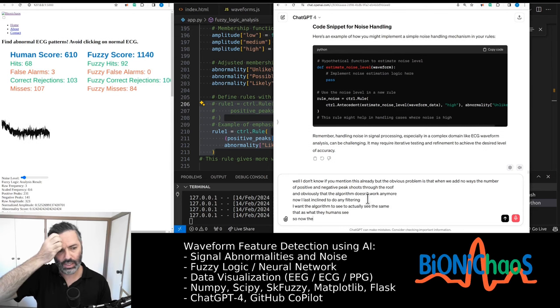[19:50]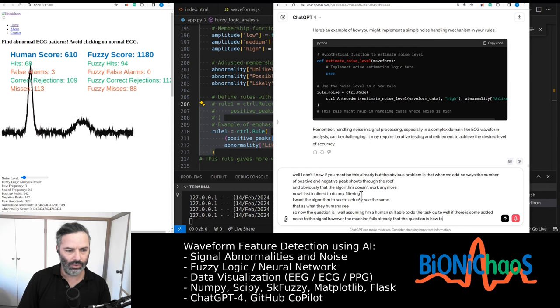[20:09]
Now, I'm less inclined to do any filtering. I want the algorithm to actually see the same data as what the humans see. So now the question is, assuming I'm a human, I do quite well if there is some added noise to the signal. However, the machine fails already. Now the question is, how do I do that?
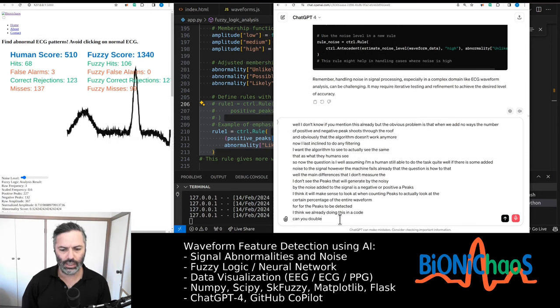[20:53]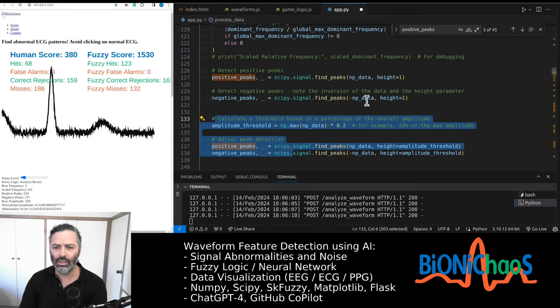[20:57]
Well, the main difference is that I don't see the peaks generated by the noise added to the signal as negative or positive amplitude peaks. I think it will make sense, when counting peaks, to look at a certain percentage of the entire waveform for the peaks to be detected. I think we're already doing this in the code. Can you double check? Instead of looking at the specific height of the signal when finding peaks, we're using a percentage. In this case, we're looking at 20% of the maximum amplitude as the threshold. I think this will be more similar to what a human does.
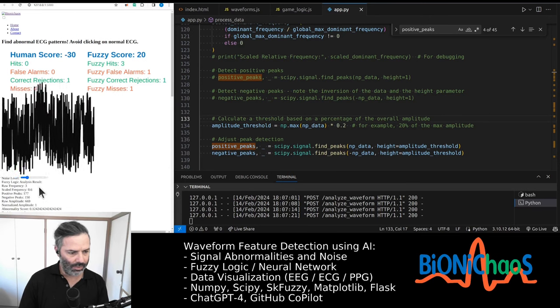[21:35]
Yeah, the numbers are smaller. It's 20%. So obviously if we make the noise larger, these negative and positive peaks will become larger numbers as well. 77. Now the question is, what's a reasonable number? Let's make these numbers like 4%, 40%. Then for this level of noise, it's finding 4, when it should be 3.
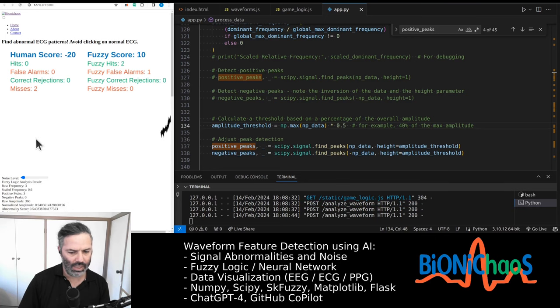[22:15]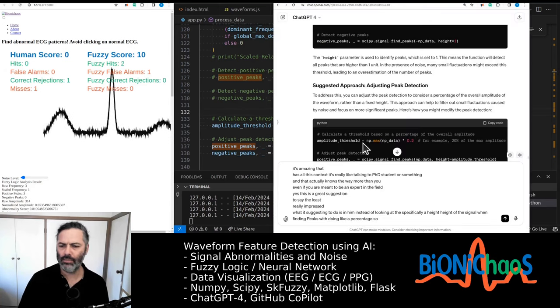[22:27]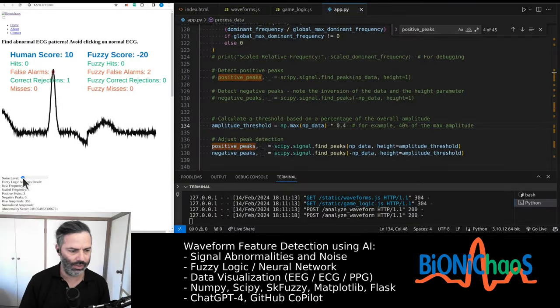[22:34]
So what's making mistakes? That's 13. It's still finding 4, whereas it should be 3. In this case, there are 3, which is correct. There should have been one negative one that it's missing. Found 51 for that one. That's obviously incorrect. I'm just suggesting that the noise is too much. The original number minimized the noise. It's fine, it's still incorrect. With no noise and the original algorithm, we get 2 and 1. That's right. Then we get 3 and 1, which is correct.
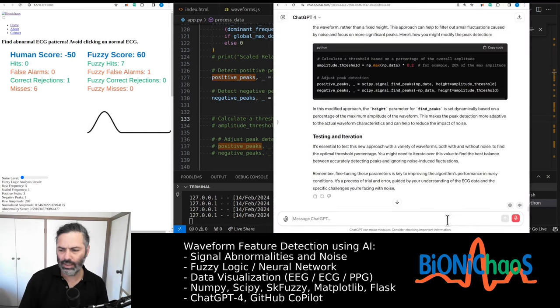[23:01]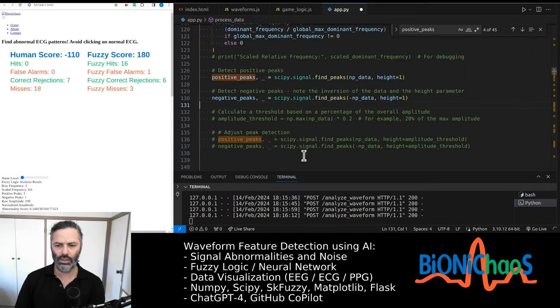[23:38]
Instead of that, this is giving some errors. How about looking at the median of the signal and taking a percentage of that for the number of negative and positive peaks? Essentially we'd like to find the baseline, and then detect peaks as a percentage above the baseline. Try this one out. So this one didn't really work. Just the percentage of the maximum level.
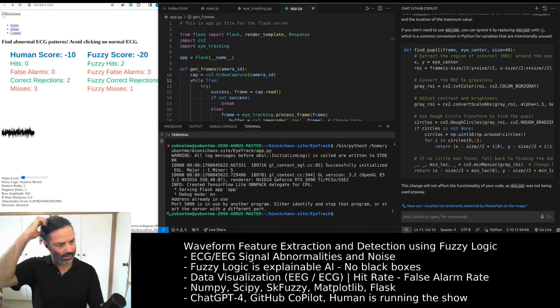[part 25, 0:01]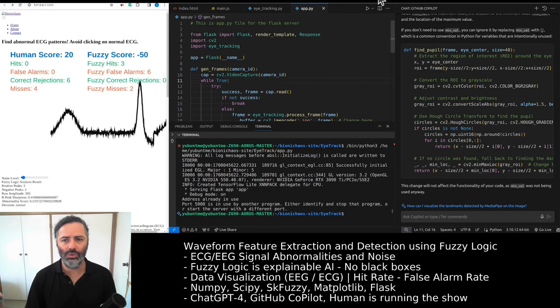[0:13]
This is the Ava application. This is actually what we have the description here for. Sorry, when working on that one, I should have had a different description. This is the one we plan to release shortly for you to play with.
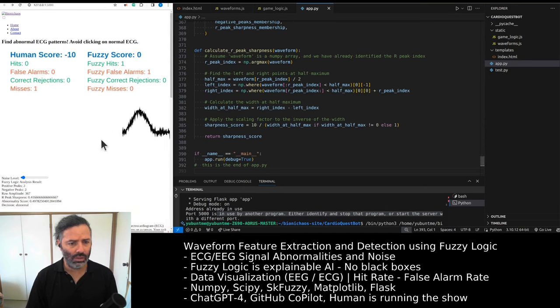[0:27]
You can now set your noise levels. That's the noise level at default. You can obviously still play the game as in the original tool. Oops, not doing well anyway. Not paying attention. That's the normal ECG, so I should get 10 points for not clicking on it. And this one is missing a bit, so I do click on it and get another 10 points. So I got one hit, one miss.
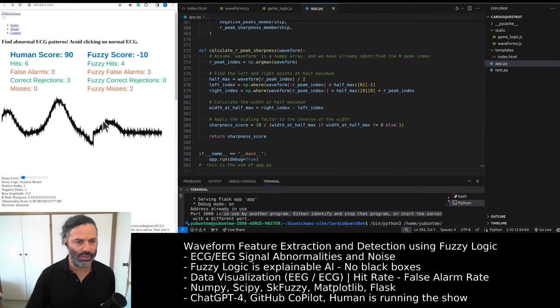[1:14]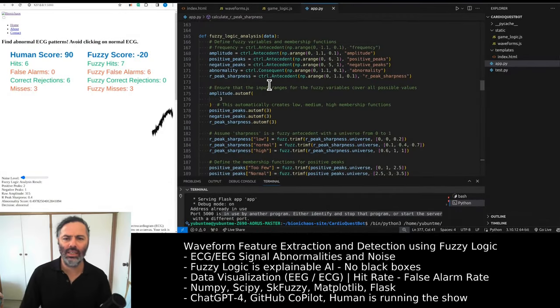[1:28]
And the current bot, which we changed the parameters of, is doing badly. It's essentially clicking on everything. So I can win against the bot, except that we can artificially tune it up and it will work much better. Ideally, we're trying not to use any magic numbers in the algorithm, so all the thresholds and everything are just there as if they were provided by... Yeah, so those are the rules.
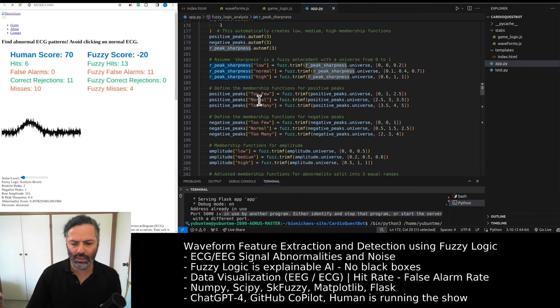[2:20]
So this is the fuzzy logic analysis. Before, we were looking at amplitude, positive peak, negative peak, abnormality and frequency. Now we got rid of frequency and are looking at the sharpness of the R peak. We're assuming the R peak is the highest positive peak, and then going, I think, halfway, measuring the distance between the left and right coordinates in it. That works fine. Then we normalize it, so we get a 0.4 sharpness for a regular one and a 0.1 for a less sharp R peak. So that's working fine, except there's still something wrong.
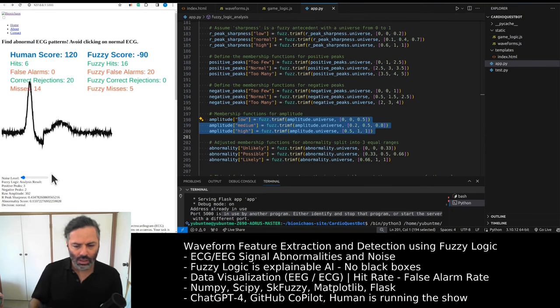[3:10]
For this signal, it made a decision that it's an abnormal ECG because the abnormality score didn't go low enough. And that's a problem. This is because we haven't done the membership functions correctly. For example, with amplitude, we have low, medium, and high because we were normalizing it. We are not normalizing anymore, so the amplitude should change. The maximum amplitude is about, what you saw before, 356. So we have to fix the code.
The question is, should we do it today? Yeah, that was a false alarm, clicking on the normal ECG. Well, the question always is, I can't code myself. The question is if one of the bots can fix this for us. Let's try Copilot. No, we didn't need this. Let's start a new one.
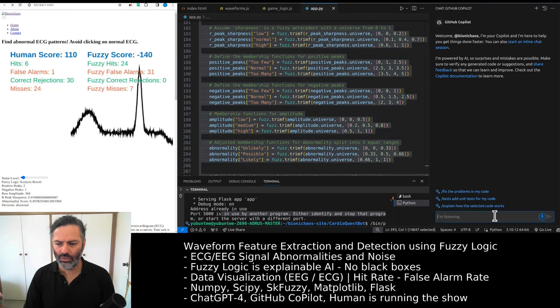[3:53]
So there's a couple of things. Our sharpness is calibrated. Now the problem is with the raw amplitude. Is there a calibration for the raw amplitude? Do we normalize that value or do we use the raw value? If so, it is not from 0 to 1. We might need to fix the code. The maximum value is about 360. Let's look at the entire Python script. Yeah, it's suggesting a normalization dividing by the maximum value.
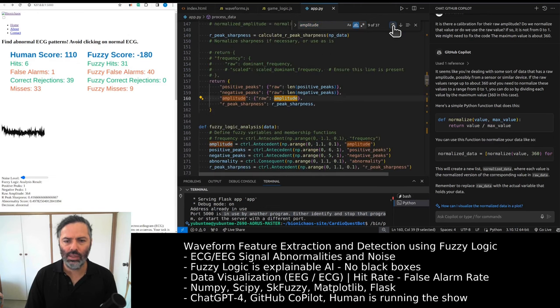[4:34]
Let's quickly check the amplitude universe. I'm mentioning amplitude like 37 times. Yeah, we only have the raw one. Should we normalize only the function? Normalize using a max value. Should we make it like 400 or something? Yeah, we don't like magic numbers. That's a quick fix.
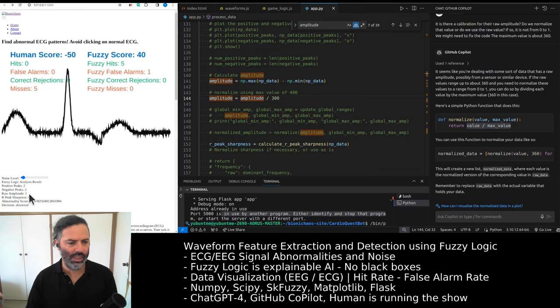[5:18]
Okay, that's just giving me zero all the time. Should we try not looking at amplitude at all? Now it's one. That wasn't normal. Ah, no, that wasn't normal. Yeah, that's normal. The raw amplitude is always one. What should I divide it by? Was it 350 or something, wasn't it? Why is this giving me zero? Can we print this value out? Clear 0.8, so yeah, that's working perfectly. It's just not showing decimal places.
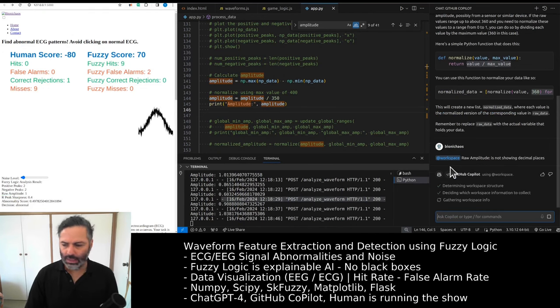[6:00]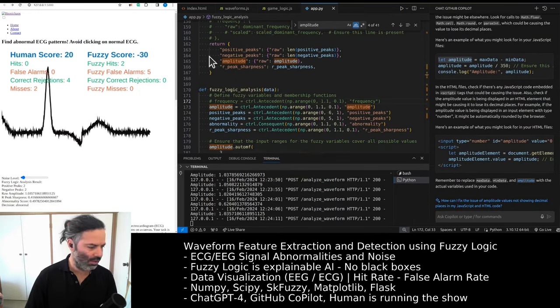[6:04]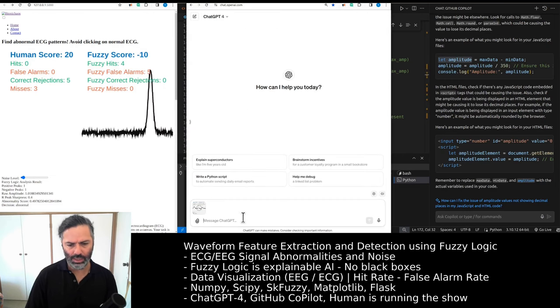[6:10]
Workspace raw amplitude is not showing decimal places. It's finding what to look at. It's taking forever. Sorry, I was muted. Can leave all the comments so it knows what we were doing. And we have this image as an example.
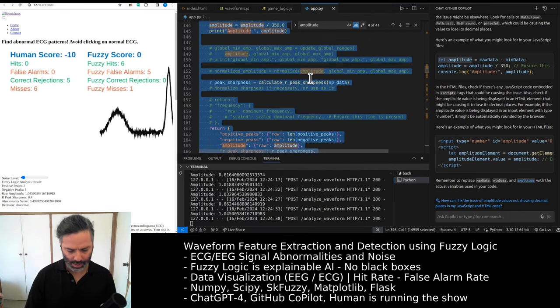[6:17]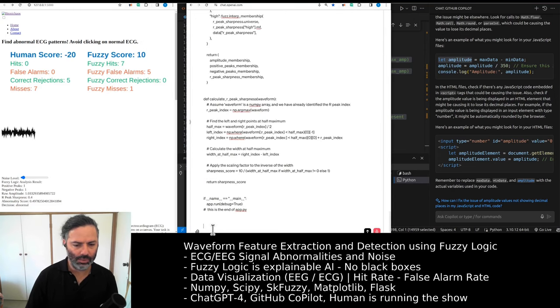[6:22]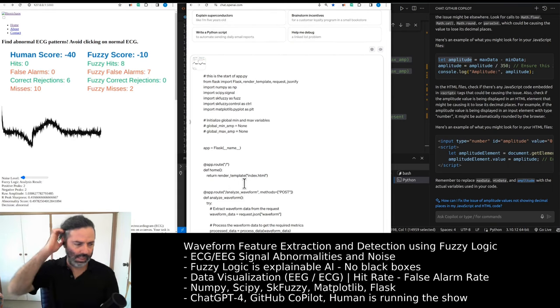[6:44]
So we have the code. Now this code should have processed the waveform in the image as a normal ECG waveform. It had a good number of positive and negative peaks. The amplitude should have been labeled as normal. Can we double check that? I think that might be what the problem is.
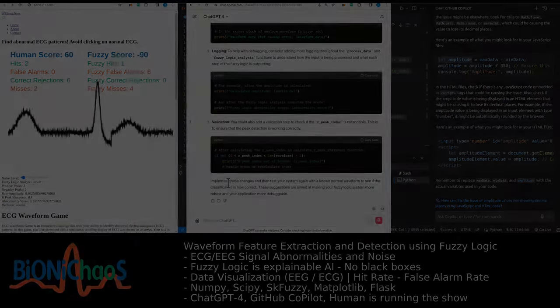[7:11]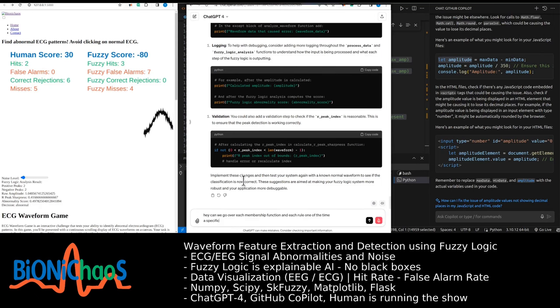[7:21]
Sharpness should have been okay. So the abnormality score should have been low enough for the algorithm to make a decision that the waveform is normal. Yep. Can we go over each membership function and each rule one at a time? Specifically the one to do with amplitude, because that's what we changed recently, the calculation of it.
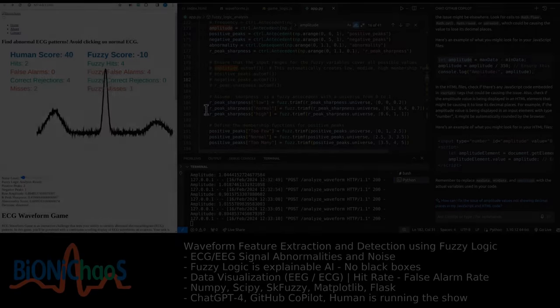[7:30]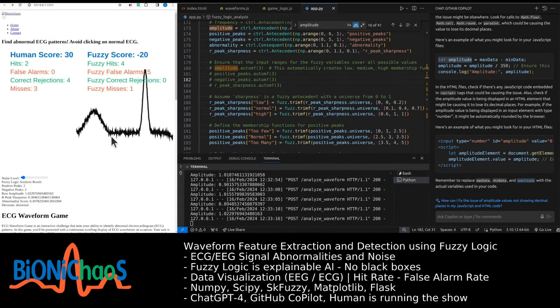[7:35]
I just realized that the frequency actually was detecting the difference between normal and one of those examples where the R peak is shifted forward in time, because that was producing a frequency of 5, and now we do not have a variable to detect it. We don't have a feature that we can use to detect that variation. Yeah, every time you fix something, you break something else, isn't it?
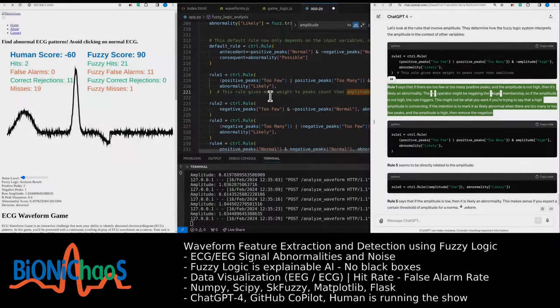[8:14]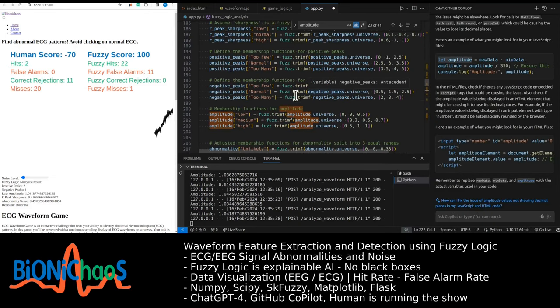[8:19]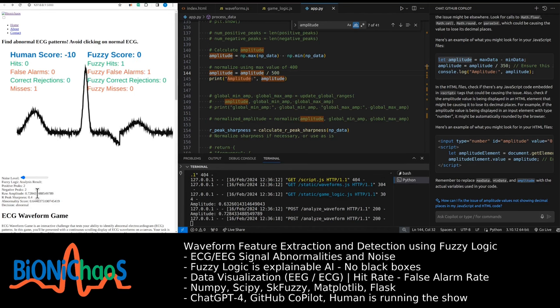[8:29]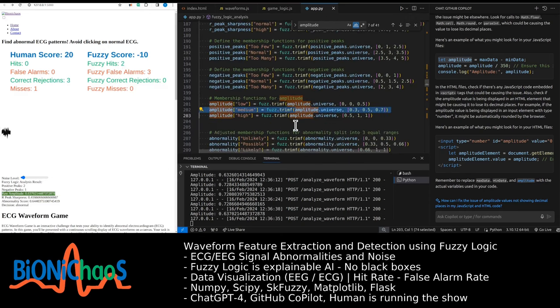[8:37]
Yeah, so we already have this rule. Should be working okay. Yeah, the amplitude needs to be tuned up. Okay, I think I know what the problem might be. It's the amplitude scaling. Let's try 500 for a sec. We get an amplitude of 0.6, then 0.7. So 0.7 should be in the normal range, which is not quite true. Yeah, this is meant to be normal.
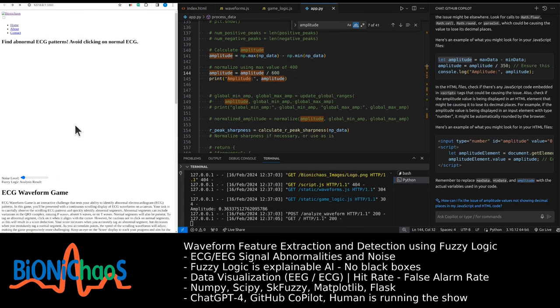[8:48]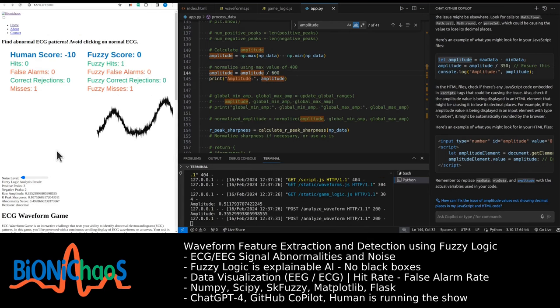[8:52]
Yeah, we can manually tune it up. That's 0.6, 0.3 abnormal, 0.6. It's classifying that one as normal, I don't know why. The rules should just make sense. It's always one of those things that we should have just designed once and not touch ever again. Should have just worked.
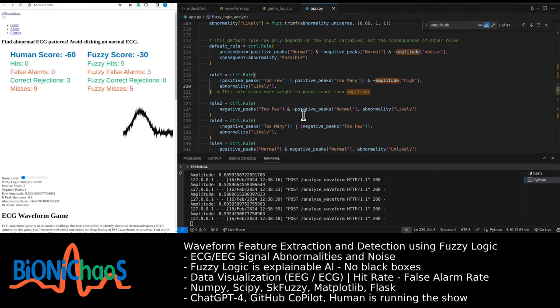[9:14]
Well, that rule now needs to... Actually, not sure about this one. Might rewrite it without looking at the amplitude. Don't include amplitude, just keep it simple. Yeah, so if positive peaks are too few or too many, the abnormality is likely. Yeah, I understand now, it kind of makes sense. I understand now why that first one gave a miss, because it was abnormal.
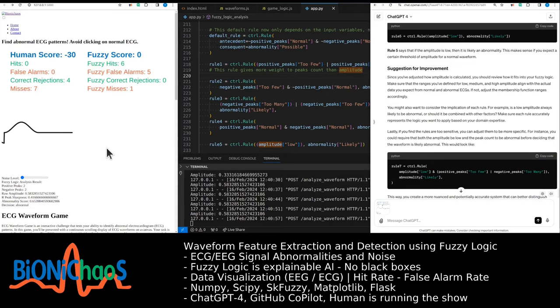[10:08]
This one is wrong. By the way, why does it show two negative peaks? That's abnormal. It should have only one negative peak. Yeah, there's something wrong with the negative peak detector. So that one is correct, and this one wasn't. It's a case of one negative peak when there should be zero. Yeah, this one. Can we check the negative peaks? The detector is incorrect.
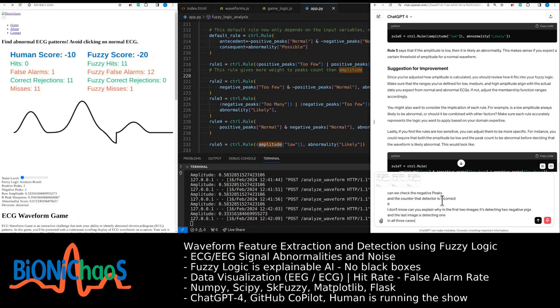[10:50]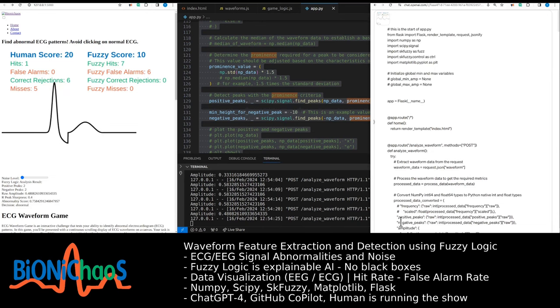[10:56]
I don't know, can you explain why in the first two images it's detecting two negative peaks and the last image is detecting one? In all three cases there should be just one negative peak. Example data in the image provided should have given only one negative peak. Instead, it's giving two. Can you look at the code and explain why and how to fix?
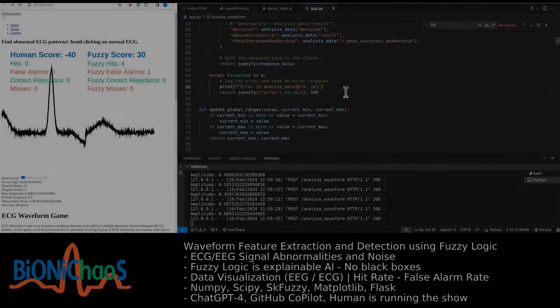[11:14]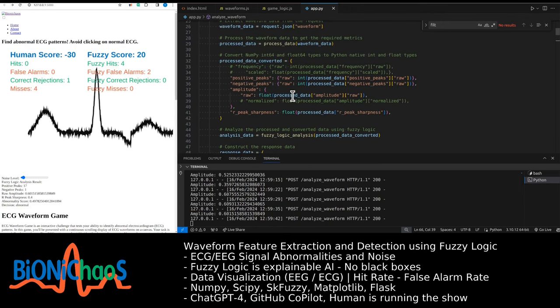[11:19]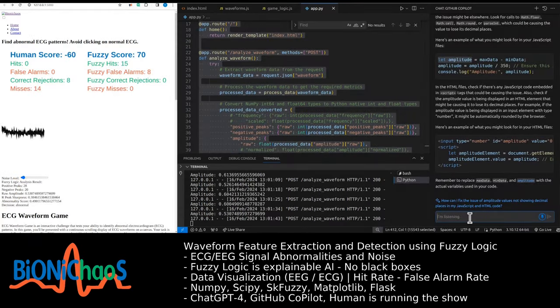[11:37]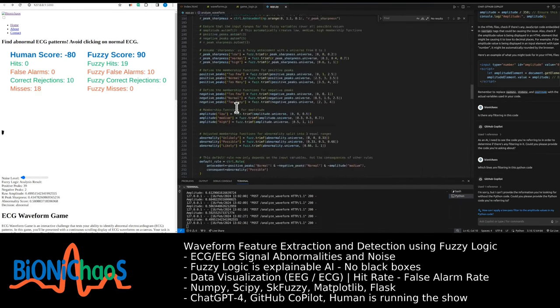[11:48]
Yeah, doing filtering somewhere already, because last time I was saying if the bot has access to filtered data, the human should as well. So I might overlay the filtered a bit over the black one on the top, because yes, we expect it to be smaller amplitude. Is there any filtering in this code? Which lines are filtering in this Python code? It's because it's too long. Yeah, it might be way too long. Not doing frequency might be a problem.
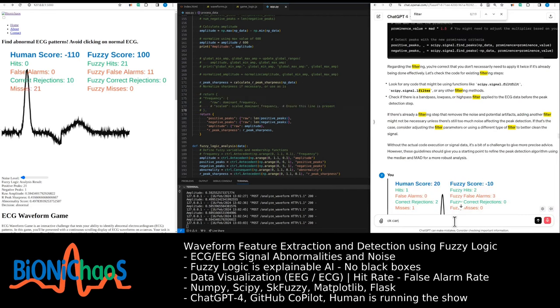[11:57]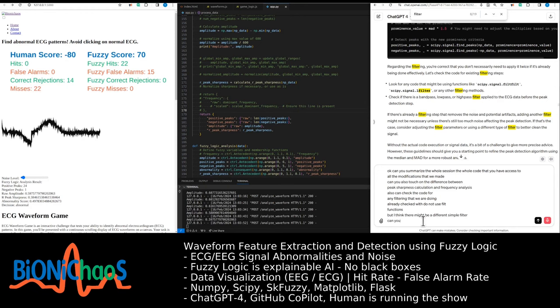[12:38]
Okay, can you summarize the whole session, the whole code that you have access to, all the modifications that we made? Can you also touch on the difference between peak sharpness calculation and frequency analysis? Also, can you check the code for any filtering that we are doing? I already checked, we do not use filter functions, but I think there might be a different, more simple filter. Can you find that? And we might be finishing now, so can you give an overall summary of how this application can be useful and if there is anything similar in the wild?
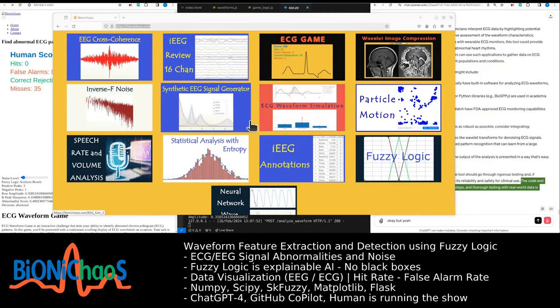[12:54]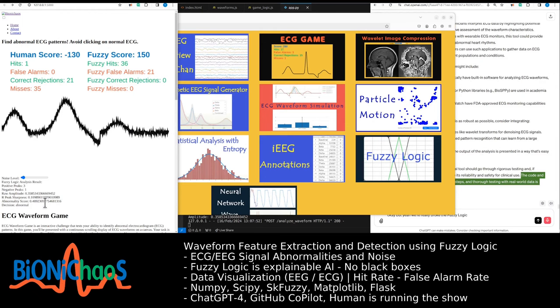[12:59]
Yeah, we really broke the fuzzy logic detector. It doesn't work at the moment. We'll have to fix it next time.
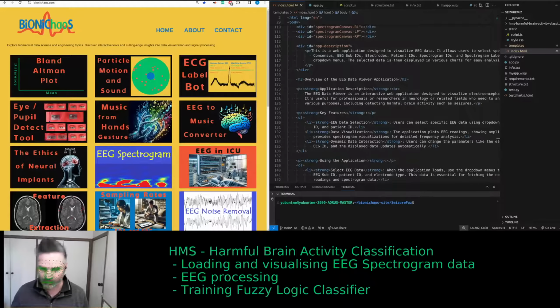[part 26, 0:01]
Yeah, we have the music going on as well, so we'll be taking breaks, doing some annoying music.
Yeah, there's a false detection sign. It's detecting a hand on my head. It's quite unusual.
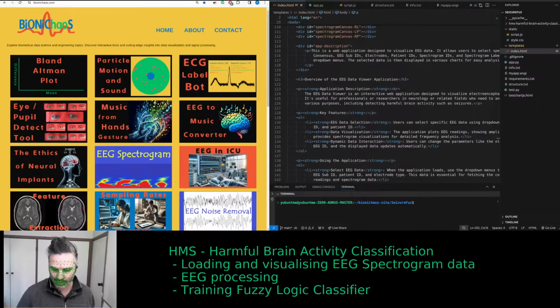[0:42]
Okay, seems like I'm using the correct microphone and everything. So, what are we going to do first? We're going to go over the website. If you checked it already, I'm happy to get the feedback.
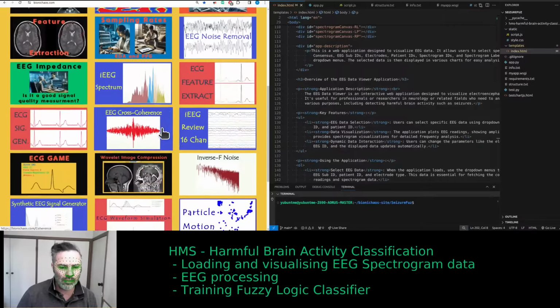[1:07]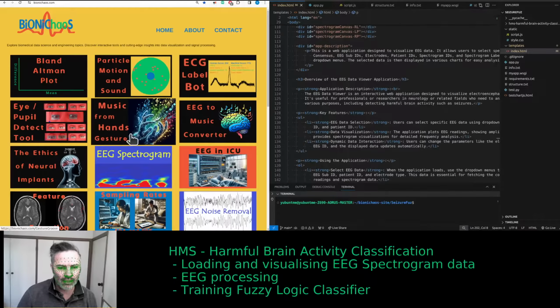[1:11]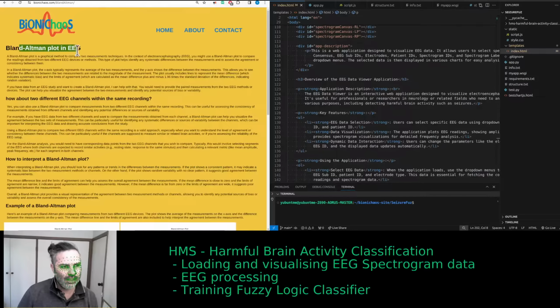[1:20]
If you tried the website, I'm also checking this. There are currently more ads on it, but I'm checking this ad blocker. Well, it's working. The ad blocker is working well. There's no ads whatsoever. We added this blog recently, but this is just because someone mentioned it.
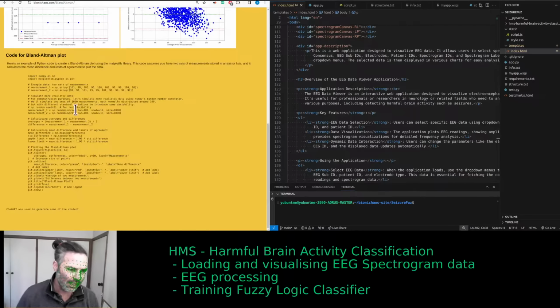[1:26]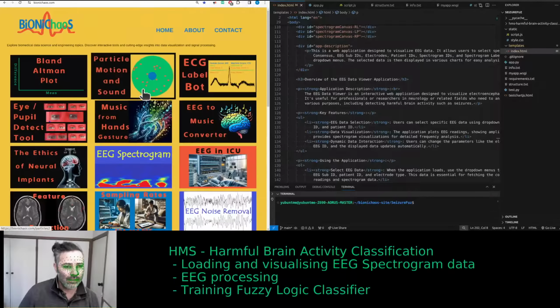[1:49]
Did a quick Python script as an example for a Bland-Altman plot, but it would be nice to actually turn it into a web application, an interactive one where you could play with real data and see what this plot looks like for different channels, things like that, similar to what we had before.
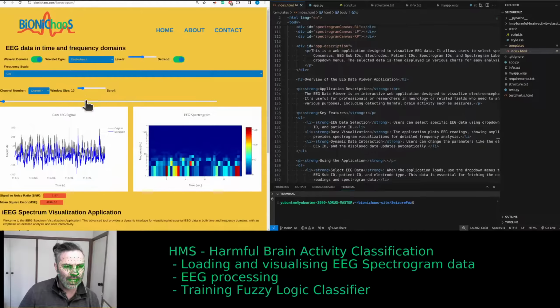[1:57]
Some of the tools are pretty heavy. This one is using a lot of my server resources. I'll have to redo it, ideally mainly using JavaScript. At the moment, it's using quite a bit of Python backend stuff, so I might be changing it. Yeah, there's a few options. This one is just a warm-up stream to see where we go next.
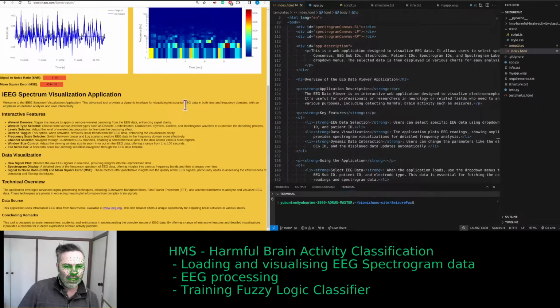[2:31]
By the way, if you do not use an ad blocker, there should be a lot of ads. Yes, you will be supporting the project that way by watching some ads. But I'm just trying to see how easily they can be blocked, and I'm pretty sure Google is doing a lot on that front, but good luck.
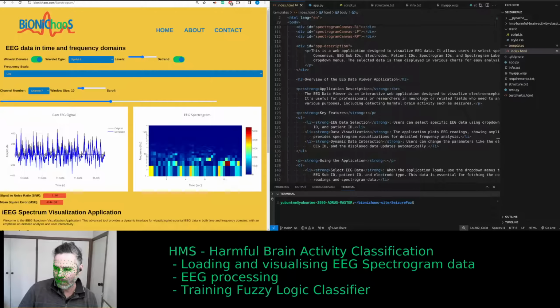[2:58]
In theory, it could display a banner saying an ad blocker usage was detected, please turn it off, kind of thing, and it will keep popping up. Yeah, so I'm just still playing with the settings.
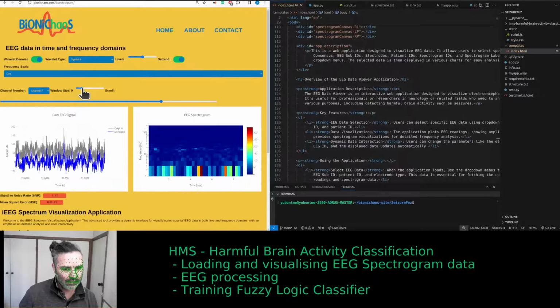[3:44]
Yes, I was just saying this histogram spectrogram tool is a bit heavy. I have to change it. The easiest thing will be just to reduce the optional window size, so not let it go over, whatever, 10 seconds. I can actually hear the server going, all the fans and everything, when using it with a slightly larger time window.
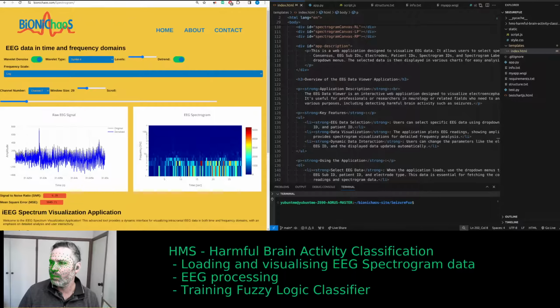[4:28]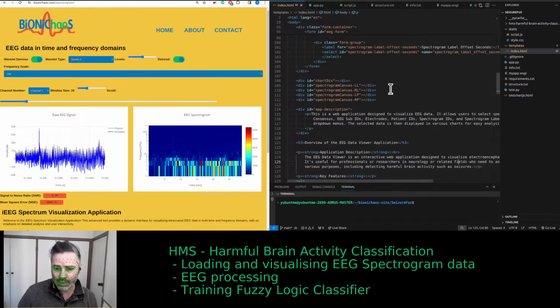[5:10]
Right, so we're doing some stuff for this competition, which is about to end, but we weren't actually competing. It's a Kaggle competition. We had something running for it, trying to parse the data, but the data set is not great, to say the least.
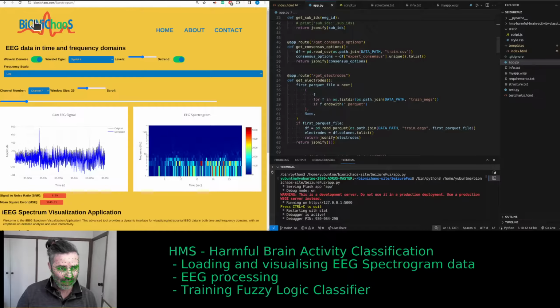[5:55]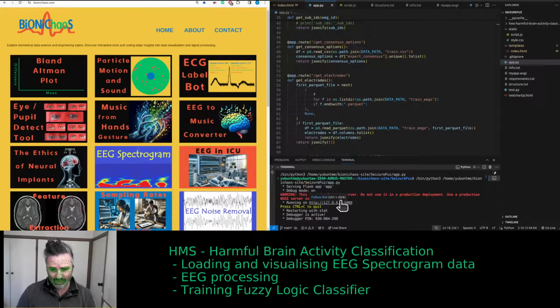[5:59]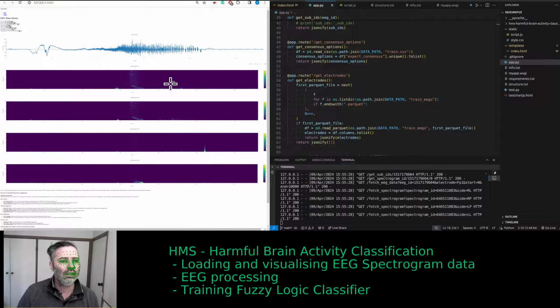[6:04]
Yeah, so I had this app script. It's a Flask application. It is being deployed, but I didn't even put the link to it on the main site, mainly for several reasons. Yeah, that's what it looks like.
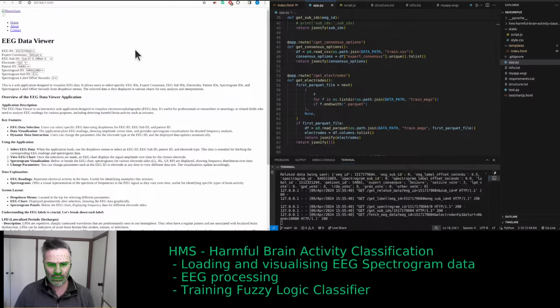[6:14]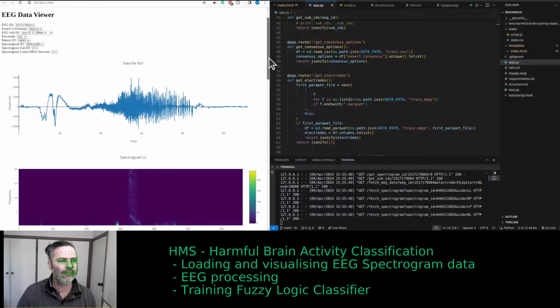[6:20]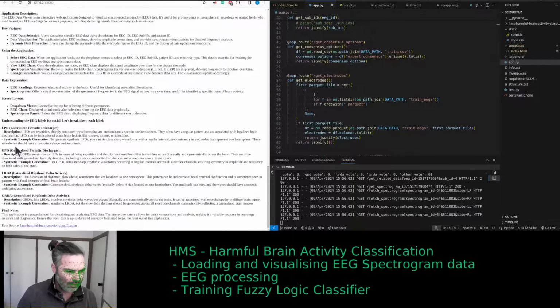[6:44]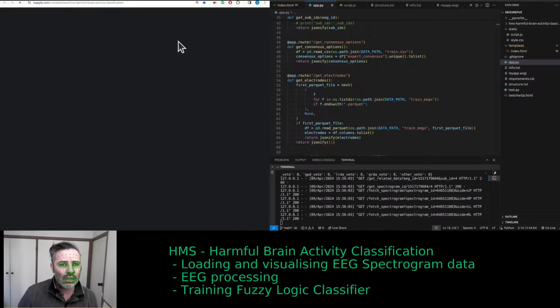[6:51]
It is deployed on the site if you want to check it out. I'm happy to share the link. It's just some things are not working. The way the data is being stored is very peculiar, to say the least. So yeah, it was quite a bit of a learning experience.
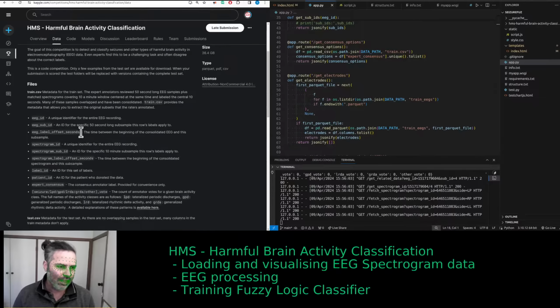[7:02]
The competition is closing in 6 hours. Let me know if you're participating or interested. The good thing about Kaggle competitions is that you get access to datasets. And this one took me some time to realize that I probably don't want to be looking at it, because there's a lot of issues with it that I already covered before.
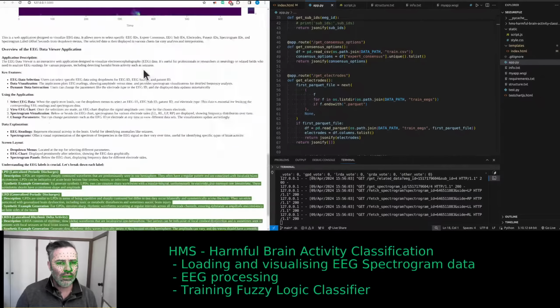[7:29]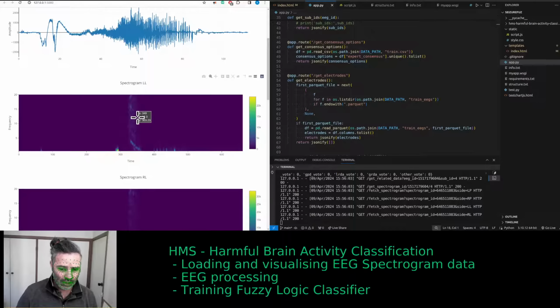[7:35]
Yes, I was trying to parse it. There's all sorts of things about the EEG actually not matching the spectrograms. They are in different time windows. The spectrogram is 10 minutes. The EEG labels are 50 seconds. There's too many unnecessary labels.
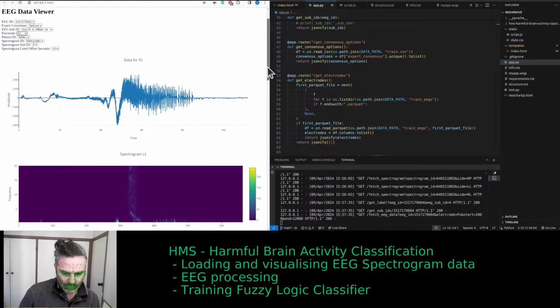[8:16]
Yeah, so that's what it sounds like. I'm thinking, is it worth continuing to look at this dataset or not? Probably not, but I'm happy to be convinced otherwise.
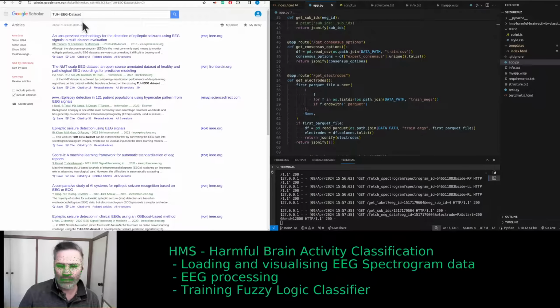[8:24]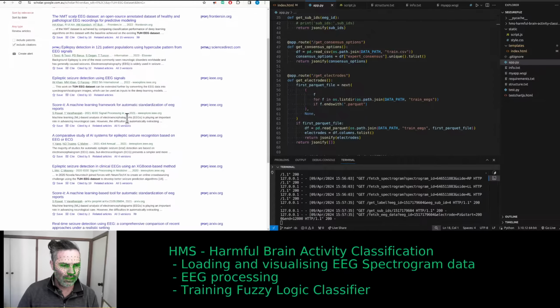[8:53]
Another option, someone mentioned this one to me recently. We might be jumping on using that different data set. However, there would be a lot of problems with that one as well. There's about 76 publications on it already. And also seizures, and apparently sleep studies.
It's a whole cohort of different experiments, I think, to look into. Find the main paper, go over it quickly. Happy to do it now.
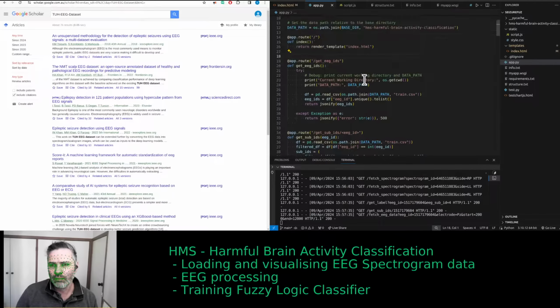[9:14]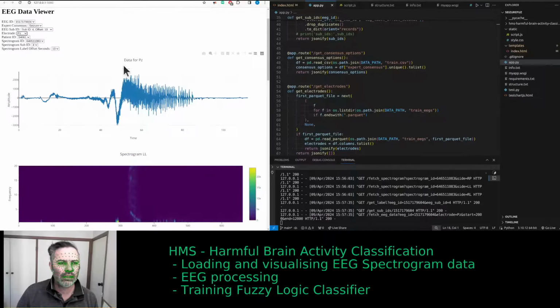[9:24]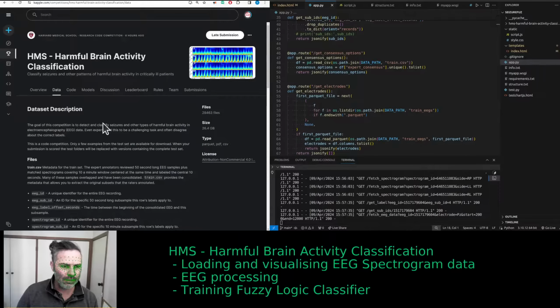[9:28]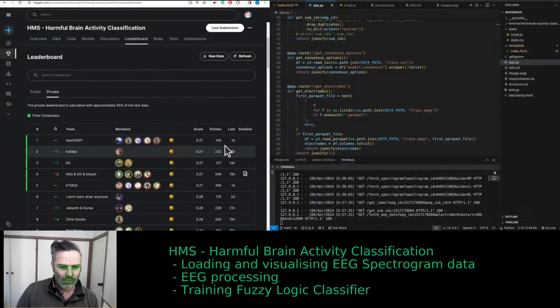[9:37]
Yes, so this Kaggle competition is probably going to end. Now that the competition is about to end in 6 hours, is it private, public? Right, so you have a public score. Interesting how the public score is much lower. This is only essentially on one. So in the training
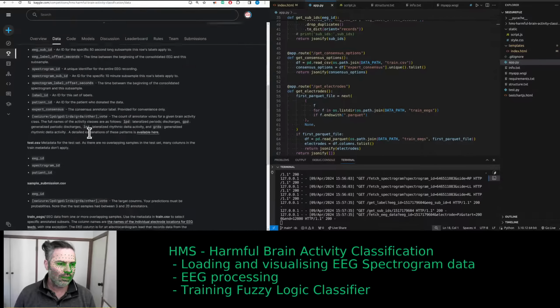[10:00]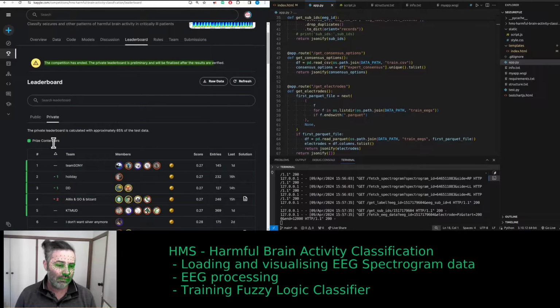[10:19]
Yeah, I won't be going over this, but essentially my understanding is the competition has ended, and the private leaderboard is preliminary and will be finalized after the results are verified. They already have it. So you can see the first 100 teams or so that submitted, because some of them had a gazillion entries, that the public score is much lower than the private score. I'm not sure how significant it is, but essentially it means that the algorithm doesn't generalize quite well onto the hidden private dataset. That might be a problem.
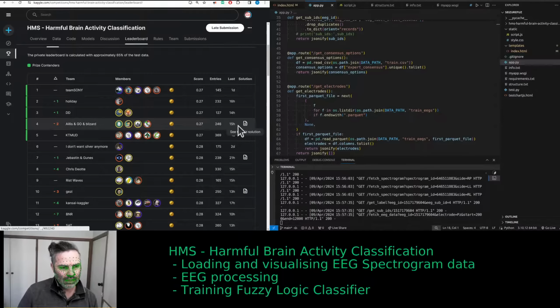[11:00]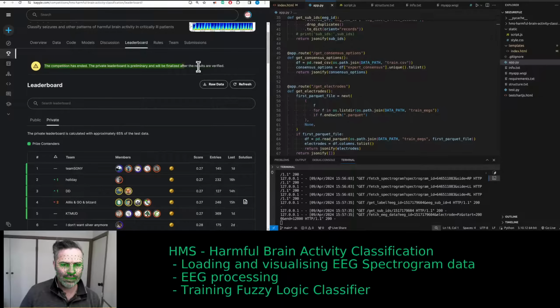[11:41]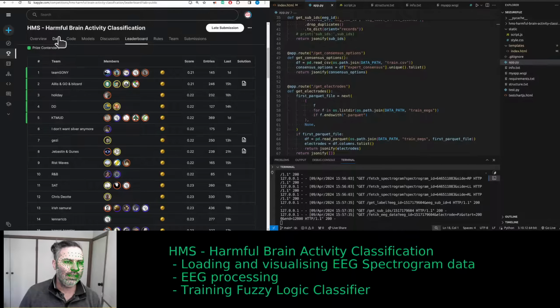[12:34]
In the public score, a lot of them had the same score, and this score is some sort of objective measure, which could also tell us how to measure the performance of these algorithms. What we really want to do is, since we already have this dataset and everything, train a simple fuzzy logic on it and then compare results to some of these.
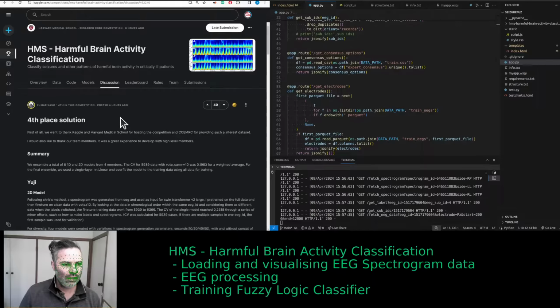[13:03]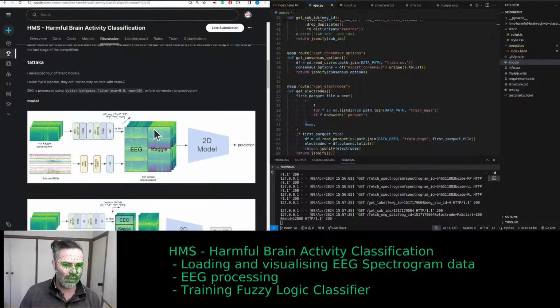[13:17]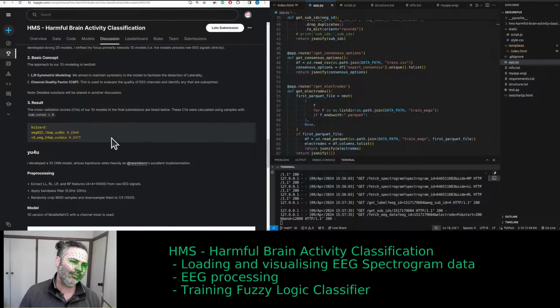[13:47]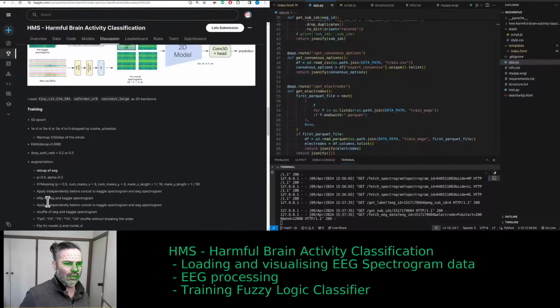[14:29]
So they published the solution. Yeah, we can cover this one. It's a convolutional neural net, with 5 stages and a channel mixer. They published the code, I would imagine. Yeah, the code is public as well.
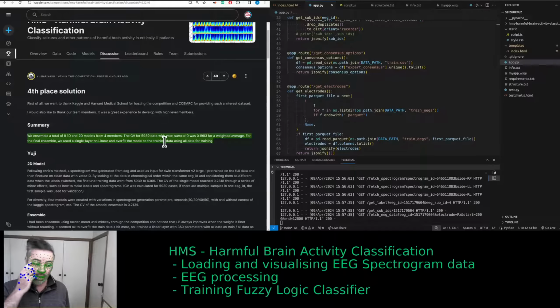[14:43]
Hi Saeed, how are you? Thanks for joining in. So there might be a delay in the response.
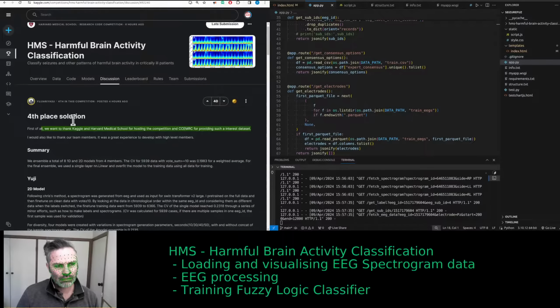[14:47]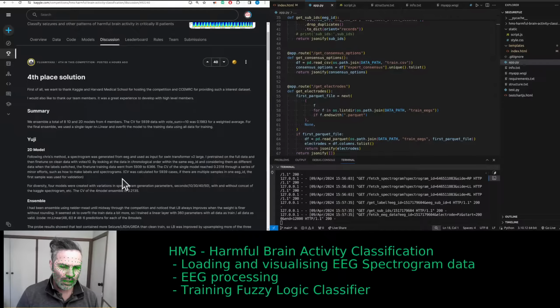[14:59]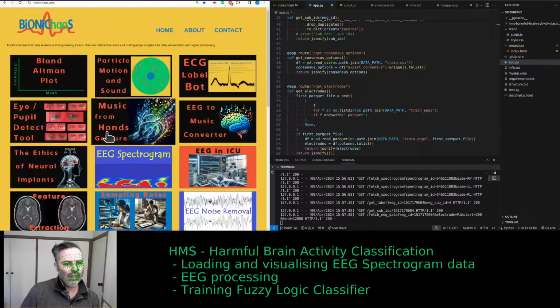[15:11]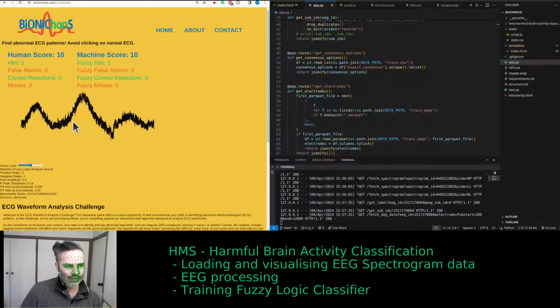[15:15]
Anyway, what I was saying is that this competition has ended. We eventually want to take the model and try to compare it to a basic fuzzy logic system, similar to this bot that we have here, which identifies normal and abnormal ECG. We'll be doing the same with EEG, looking at a couple of parameters. It's essentially the same as for ECG, well, not the same, but as simple, if not simpler. You would have your frequency, amplitude, and channel interactions, and this is just assuming a single channel ECG.
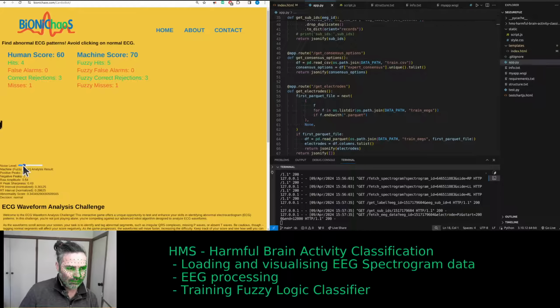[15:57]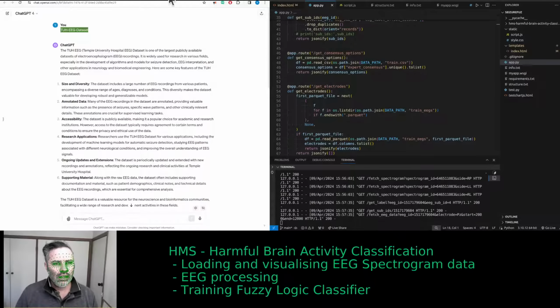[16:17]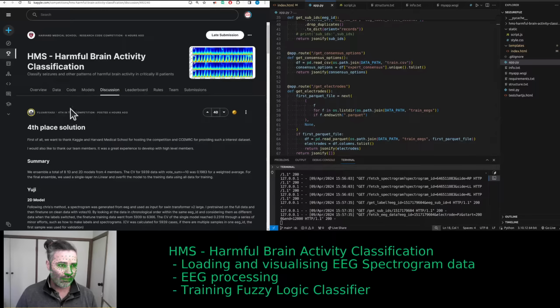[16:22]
Noise, yeah, we would not be doing much filtering. I assume the signal was already filtered, even if not digitally, by the hardware of the recording equipment. And that data was collected by Harvard Medical School, so it must be correct, right? So it must be great quality.
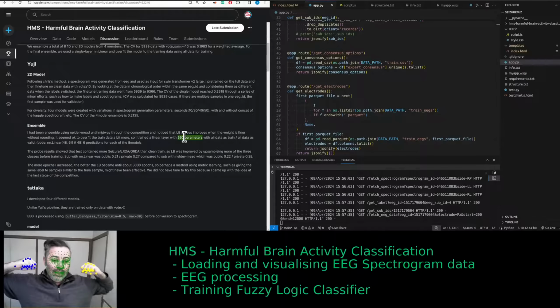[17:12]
Looking at 360 parameters, it would be good to know what they are. I don't think there is any EEG expert who could name that many parameters, so I have to question what the parameters are. When I see that many parameters, I need some music to relax. Well, I'm pretty sure some of the models will have thousands of parameters, so maybe 360 is not that bad. I don't know if they cover it here or not, probably not, but it would be interesting to know which parameter had the strongest impact on the performance of the algorithm.
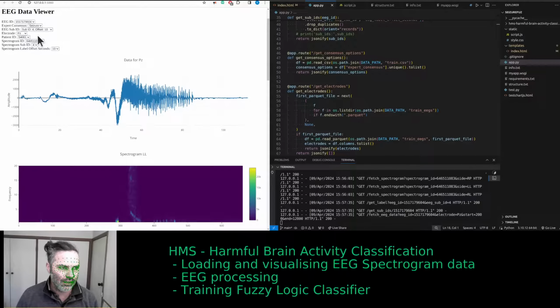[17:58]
Because eventually I want to deploy something, I want to have the dataset, and you have the label, which is part of the data, and then you have the prediction of the model. So we could do the neural net model and then basic fuzzy logic and see how they compare to one another. That would be good. That's the general idea.
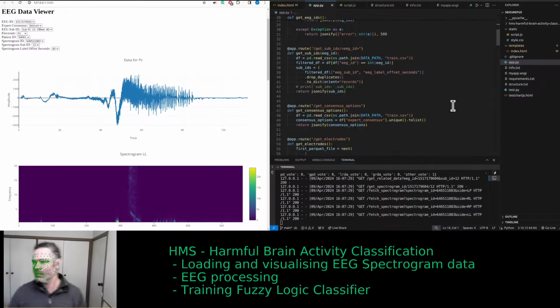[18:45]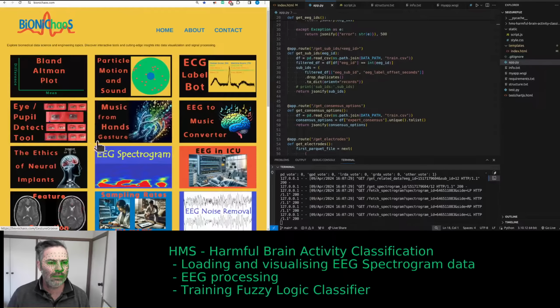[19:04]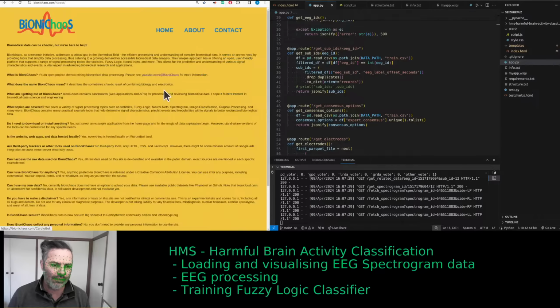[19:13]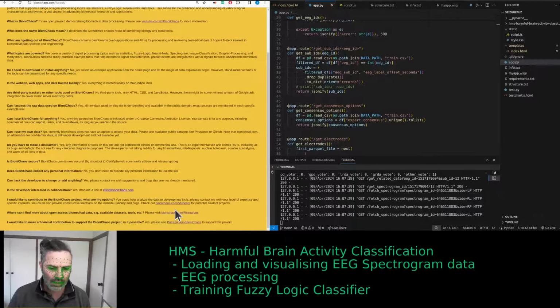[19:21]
Yeah, primarily we're interested in XAI, explainable AI, so that we can actually see into that black box and make the black box transparent. Maybe there's another little black box inside, but at least we want to have some sort of transparency into the algorithms that we deploy and the models.
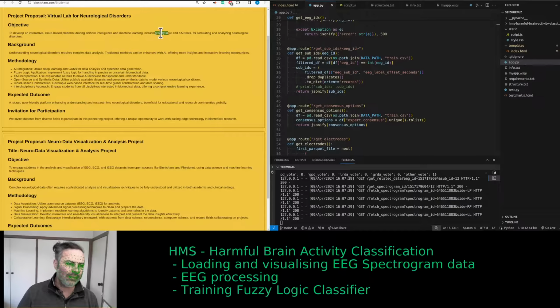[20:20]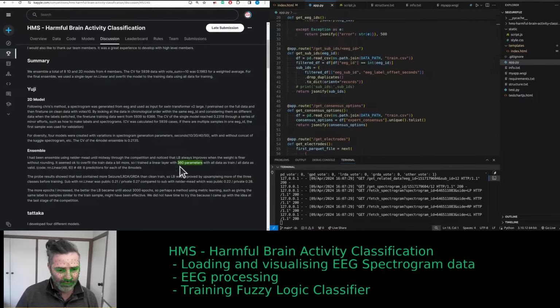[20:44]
So the models essentially can be, if we treat the fancy model as an expert, using fuzzy logic, we could simplify it. Normally we don't need the fancy models. If you have, like in that case, 360 parameters, I'm pretty sure we can eliminate half and then potentially another half and another half of this number, and the model will still perform quite well, not using too much electricity.
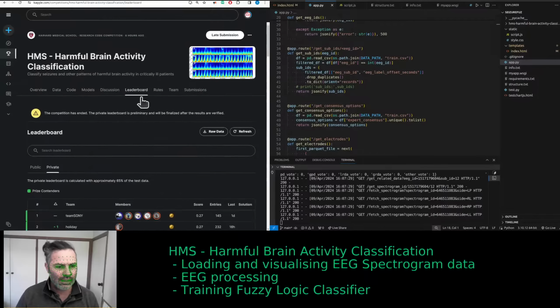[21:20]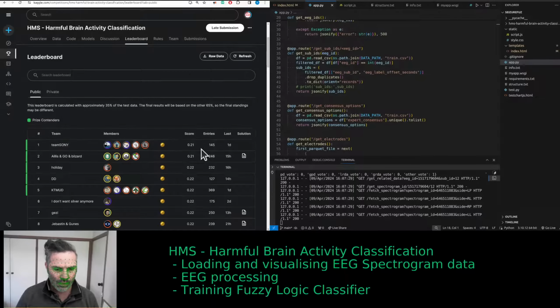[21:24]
And the other question is, of course, how easily you can replicate your performance onto another dataset, because that's normally quite problematic. In this case, I don't know how this score was actually measured, or how significant a difference it is between 0.21 and 0.27. Yeah, I wouldn't know.
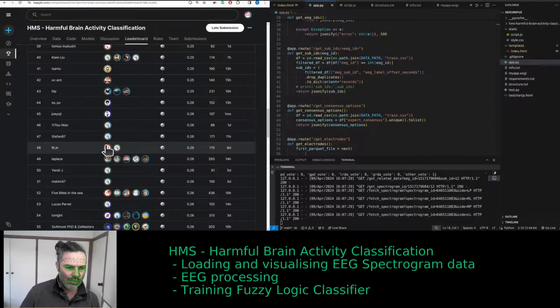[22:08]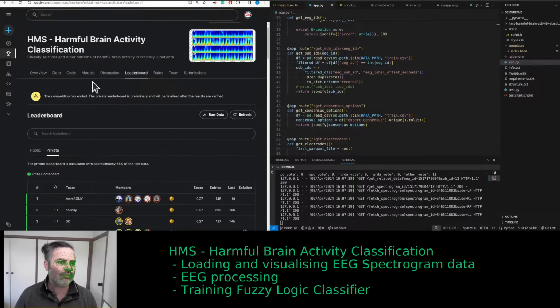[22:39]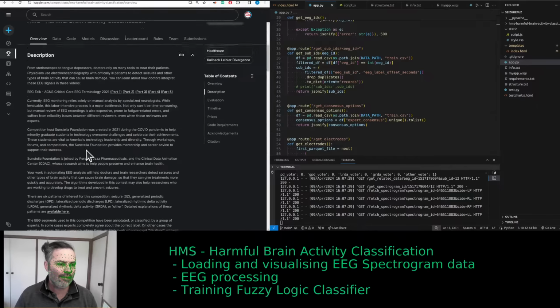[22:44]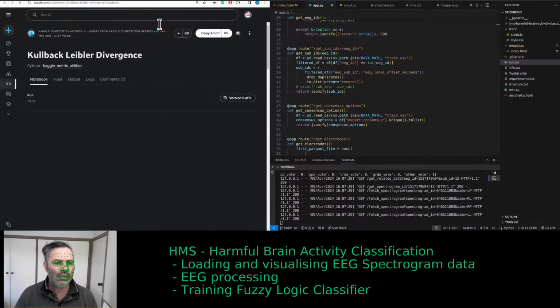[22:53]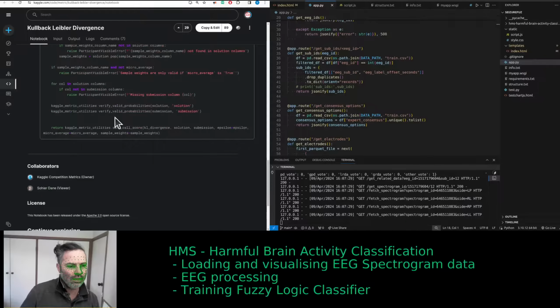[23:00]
Yeah, on the public dataset 0.27 is over 50 places down the list in the public score. So I have a feeling it is quite a significant difference, because you see those numbers are quite close to one another. Yeah, they're using this divergence. Could have just the tool on this divergence alone. It's not much of an explanation, is it? It's a code that calculates the score. Some example.
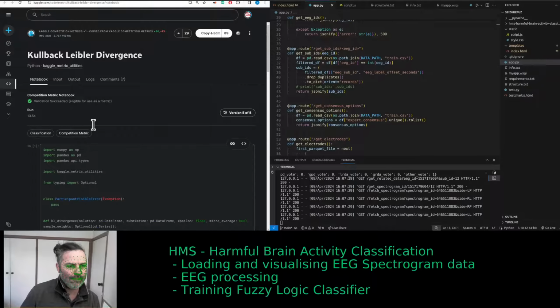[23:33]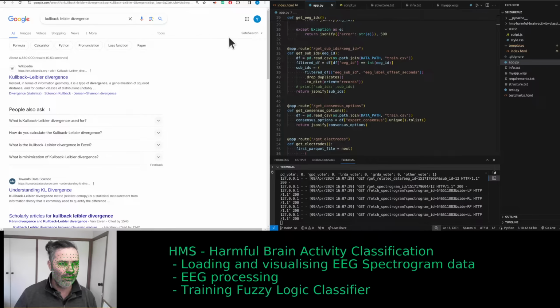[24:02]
Considering this is a warm-up stream, I just want to get back to regular streams and stuff, because that's how we generate content for the website. Yes, something like this would actually be of interest.
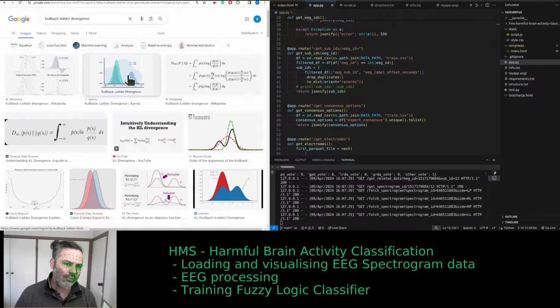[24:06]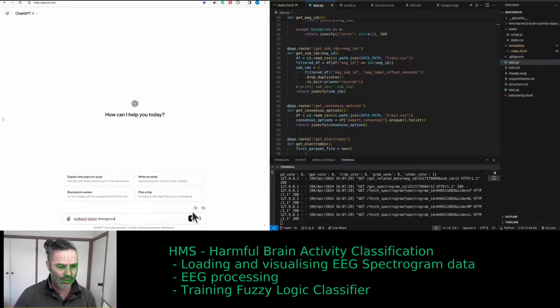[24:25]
Can compare this to D prime. Let me ask ChatGPT. Wonder if it will suggest D prime as an alternative. Can do a bit of a comparison between them. Model selection.
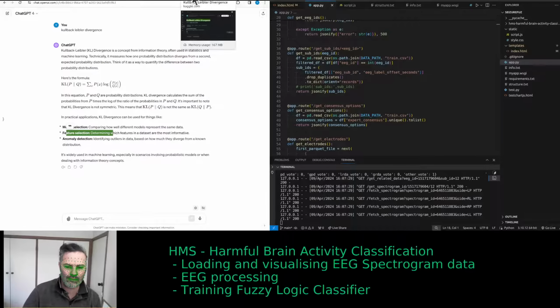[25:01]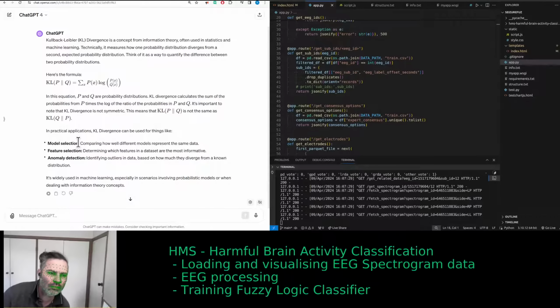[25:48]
In practical applications, KL divergence can be used for things like model selection, comparing how well different models represent the same data. Feature selection, determining which features in a dataset are the most informative. Anomaly detection, identifying outliers in data based on how much they diverge from a known distribution. It's widely used in machine learning, especially in scenarios involving probabilistic models or when dealing with information theory concepts.
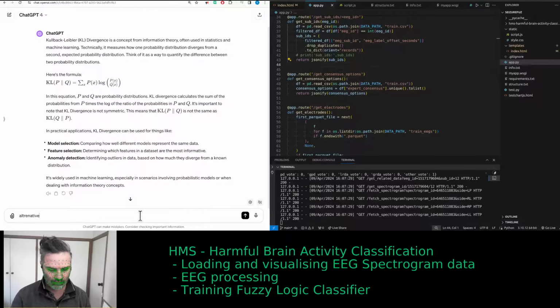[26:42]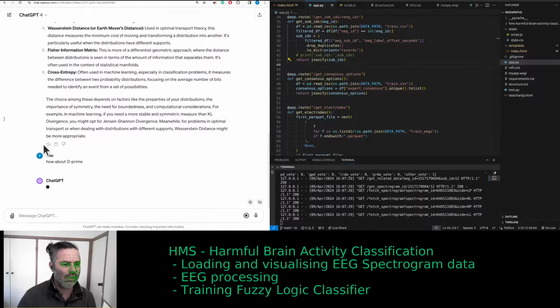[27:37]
Well, I didn't mention D prime. Well, it's from detection theory. That's step one, I know.
Let's read that. If you're looking for alternatives to Kullback-Leibler, KL, divergence, there are several other methods to measure the difference or similarity between two probability distributions. These alternatives have different properties and are used based on the specific requirements of your problem. Here are a few. 1. Jensen-Shannon divergence, JSD. This is a symmetric version of KL divergence. It's defined as the average of the KL divergence from each distribution to the mean of both distributions. This makes it more stable and less sensitive to small sample sizes.
2. Hellinger distance. It measures the similarity between two probability distributions and is bounded between 0 and 1, making it easier to interpret. It's defined as the square root of the sum of the squared differences between the square roots of the probabilities. 3. Total variation distance. This is the maximum difference between the probabilities assigned to the same event by two different distributions.
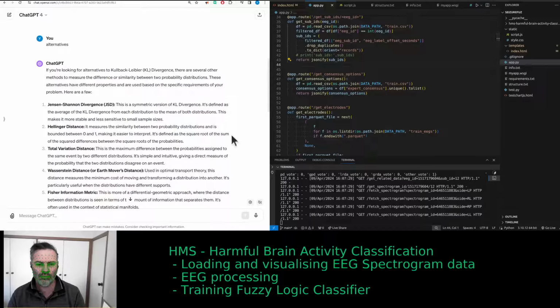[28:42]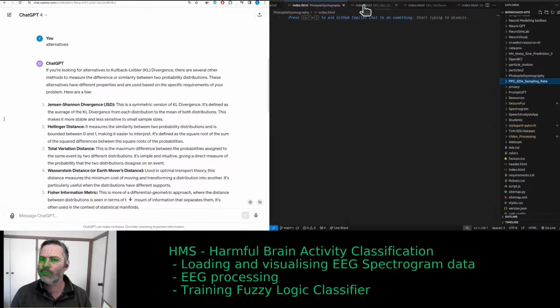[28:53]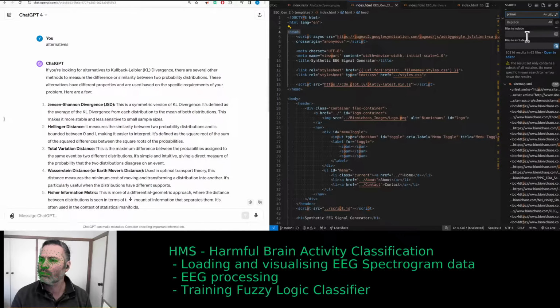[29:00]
It's simple and intuitive, giving a direct measure of the probability that the two distributions disagree on an event. 4. Wasserstein distance, or Earth mover's distance. Used in optimal transport theory, this distance measures the minimum cost of moving and transforming a distribution into another. It's particularly useful when the distributions have different supports.
Number 5. Fisher information metric. This is more of a differential geometric approach, where the distance between distributions is seen in terms of the amount of information that separates them. It's often used in the context of statistical manifolds.
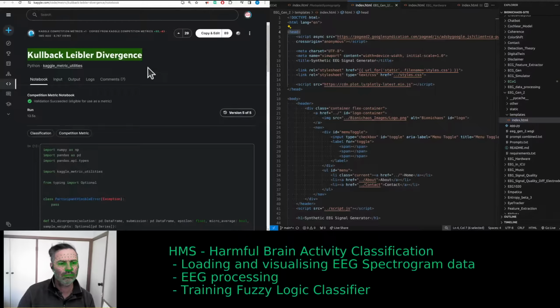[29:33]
6. Cross entropy. Often used in machine learning, especially in classification problems. It measures the difference between two probability distributions, focusing on the average number of bits needed to identify an event from a set of possibilities.
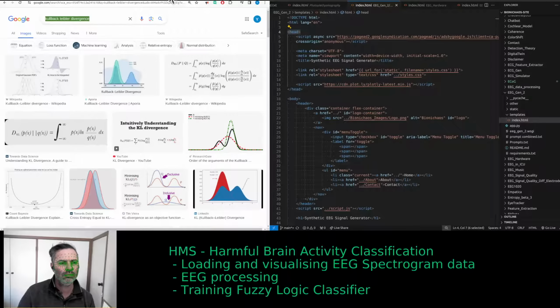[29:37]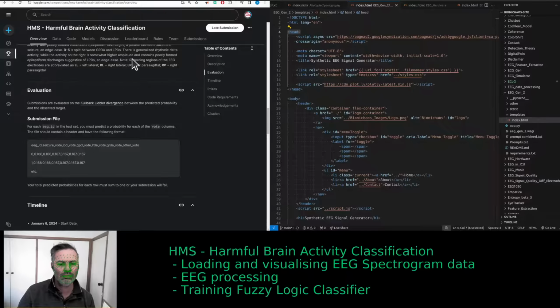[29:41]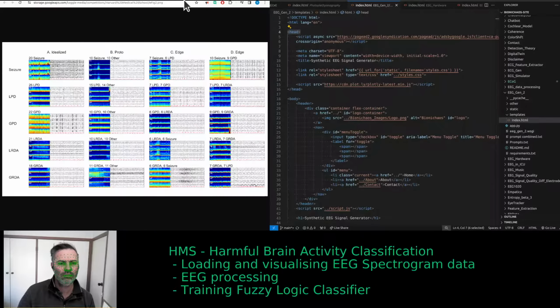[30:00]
The choice among these depends on factors like the properties of your distributions, the importance of symmetry, the need for boundedness, and computational considerations. For example, in machine learning, if you need a more stable and symmetric measure than KL divergence, you might opt for Jensen-Shannon divergence. Meanwhile, for problems in optimal transport, or when dealing with distributions with different supports, Wasserstein distance might be more appropriate.
Yeah, back to that competition for a second. Again, let's end it. We do have the data, so I'm kind of familiar with what the data is doing. But yeah, this figure is quite useful in the sense of describing the dataset. So I have these different types of edge cases. In this case, those are the labels.
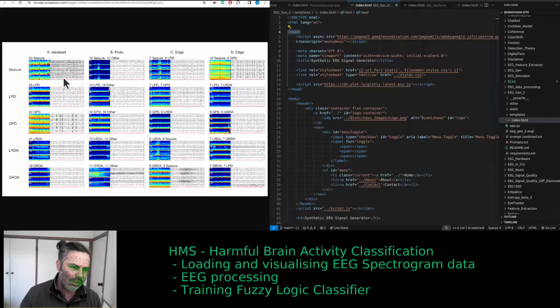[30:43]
So this is supposedly 10-minute EEG, for which you actually do not have the raw EEG, you only have the spectrogram and some 50-second samples of the raw EEG. So essentially, I think they want you just to look at the spectrogram. You essentially have 1, 2, 3, 4 spectrograms in this one image there. Don't know if that's the seizure there. You should be able to see the... Yeah, those images are meant to be clearer.
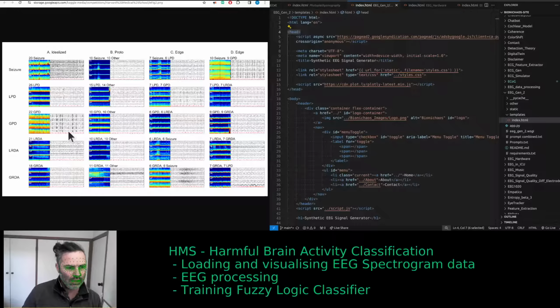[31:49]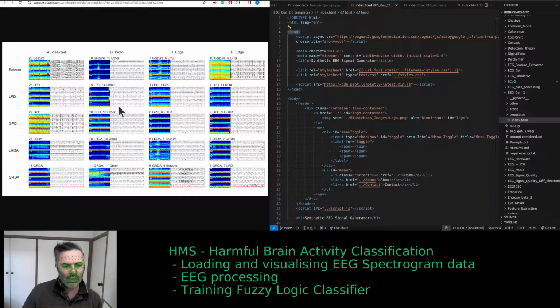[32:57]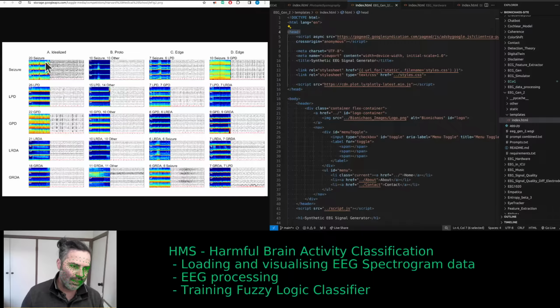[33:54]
I wish there was, I don't know if the original thing was published as well. That actually just has the raw data, just the raw EEG, what was recorded from the device. So not filtered or anything. One where we could generate spectrograms out of it. So I don't know when they were labeling, were they looking at the spectrograms or at the time series, at the raw EEG signal? I don't think that was mentioned. There's a paper on the data.
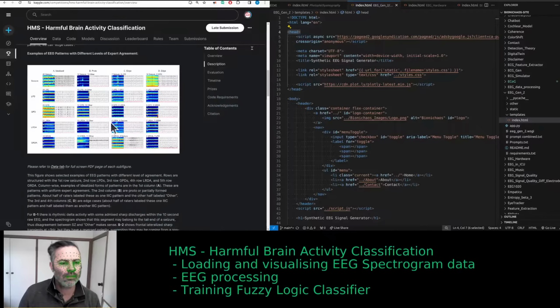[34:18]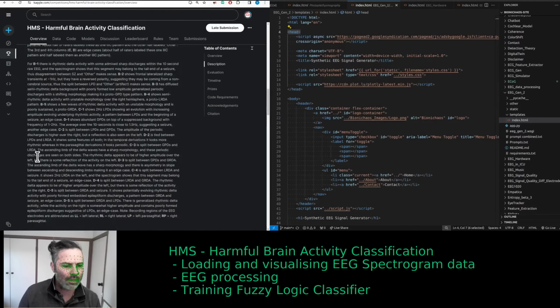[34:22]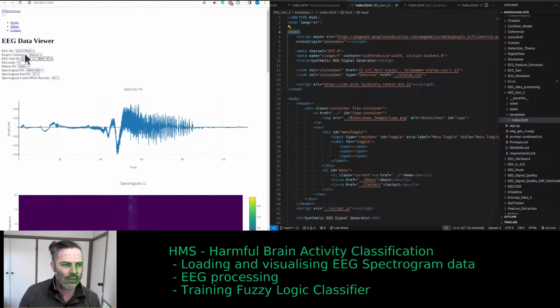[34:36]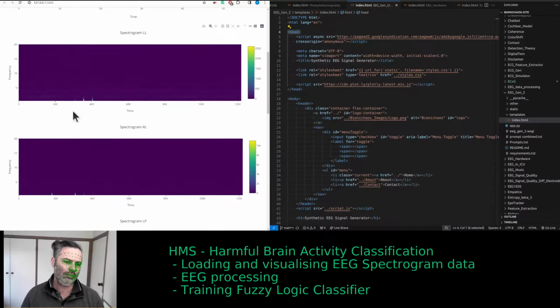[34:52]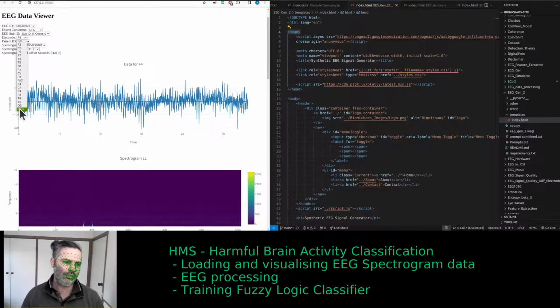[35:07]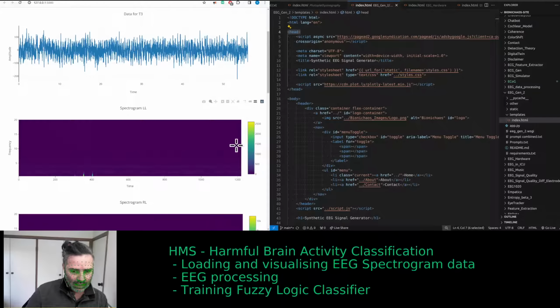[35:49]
Yeah, we might then not be using this dataset anymore. Yeah, there's some problem with the ECG, so what makes you think that the EEG might be problematic as well. There's something there, low frequency. On the left side, you can barely see it. Yeah, maybe I'm not plotting it correctly in terms of color intensity. Yeah, that looks like it should be marked as AVA. That's correct, in the sense that there's something wrong with the recording.
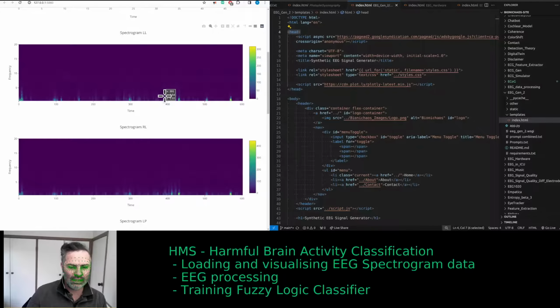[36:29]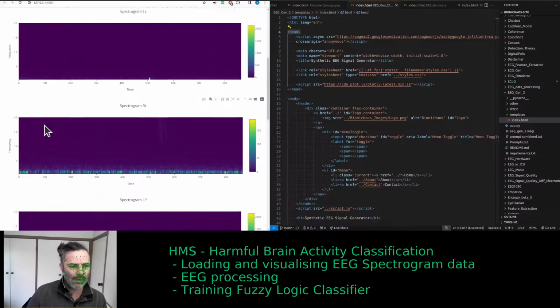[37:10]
It's odd that this spectrum doesn't correspond to what's in the signal. Yeah, there's just some weird stuff in it. But the spectrogram is different. So the spectrograms, in many cases, do not match what you see in the raw data, which is unusual. Yeah, I would expect something like this for your baseline. This looks more like EEG. It was marked as LPD. Anyway, yeah, I think we need to know when to give up on a dataset as well. I think this will be it.
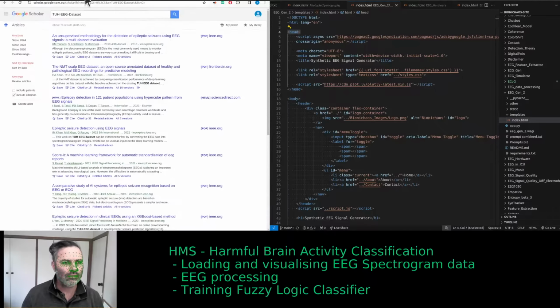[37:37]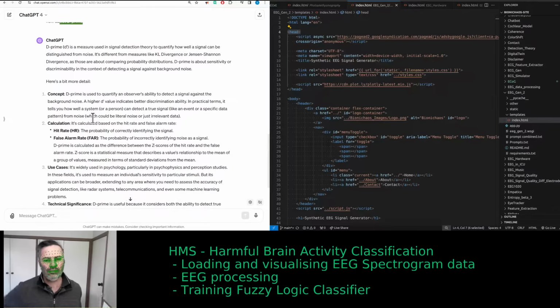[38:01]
Right, so I have these alternatives to Kullback-Leibler divergence. Let's read about D prime quickly. D prime is a measure used in signal detection theory to quantify how well a signal can be distinguished from noise. It's different from measures like KL divergence or Jensen-Shannon divergence, as those are about comparing probability distributions.
D prime is about sensitivity or discriminability in the context of detecting a signal against background noise. Here's a bit more detail. 1. Concept. D prime is used to quantify an observer's ability to detect a signal against the background noise. A higher D prime value indicates better discrimination ability. In practical terms, it tells you how well a system or a person can detect a true signal, like an event or a specific data pattern, from noise, which could be literal noise or just irrelevant data.
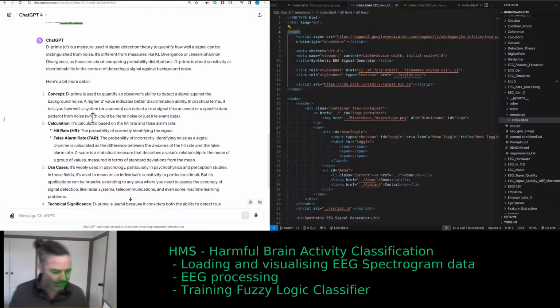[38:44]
2. Calculation. It's calculated based on the hit rate and false alarm rate. Hit rate, HR, the probability of correctly identifying the signal. False alarm rate, FAR, the probability of incorrectly identifying noise as a signal. D prime is calculated as the difference between the z-scores of the hit rate and the false alarm rate. Z-score is a statistical measure that describes a value's relationship to the mean of a group of values, measured in terms of standard deviations from the mean.
3. Use cases. It's widely used in psychology, particularly in psychophysics and perception studies. In these fields, it's used to measure an individual's sensitivity to particular stimuli. But its applications can be broader, extending to any area where you need to assess the accuracy of signal detection, like radar systems, telecommunications, and even some machine learning problems.
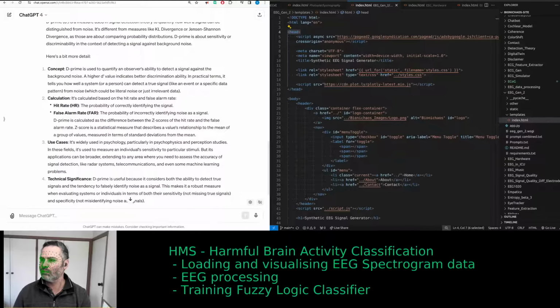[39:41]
4. Technical significance. D prime is useful because it considers both the ability to detect true signals and the tendency to falsely identify noise as a signal. This makes it a robust measure when evaluating systems or individuals in terms of both their sensitivity, not missing true signals, and specificity, not misidentifying noise as signals.
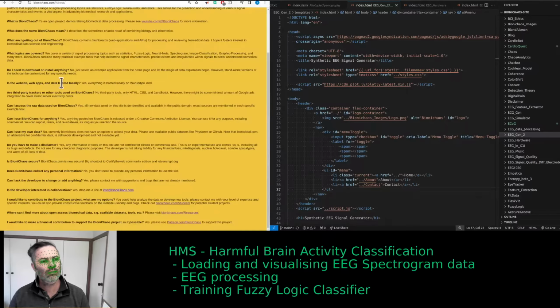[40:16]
In summary, D prime is a different tool for a different job compared to KL divergence and its alternatives. If you're dealing with issues of signal detection, sensitivity, and specificity, D prime is the go-to metric. For comparing probability distributions, you'd use something like KL divergence or its alternatives.
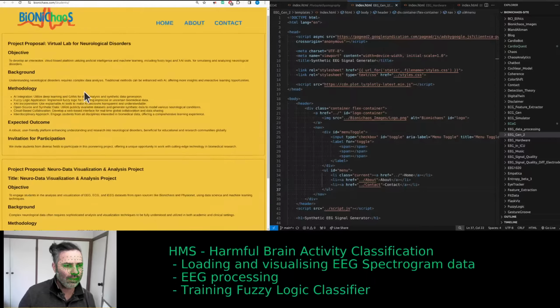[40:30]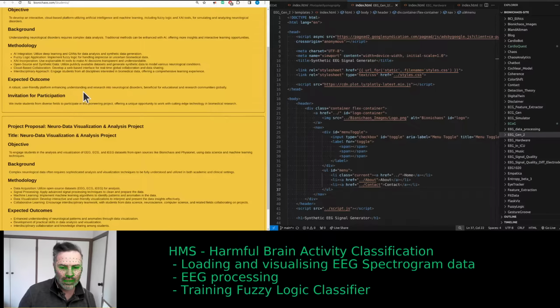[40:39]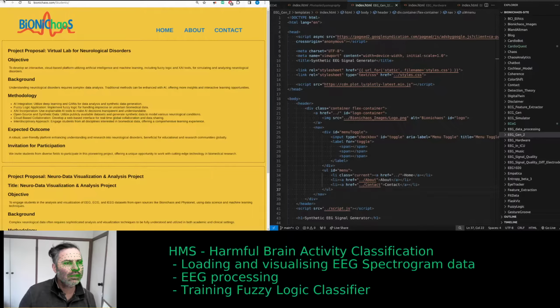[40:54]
Yes, we said there are potential student projects that are available. This one will be focusing on explainable AI, taking black boxes and making them slightly more transparent. And the second project is mainly around visualization of data. You may have a look.
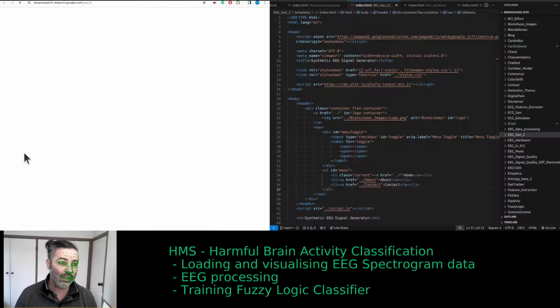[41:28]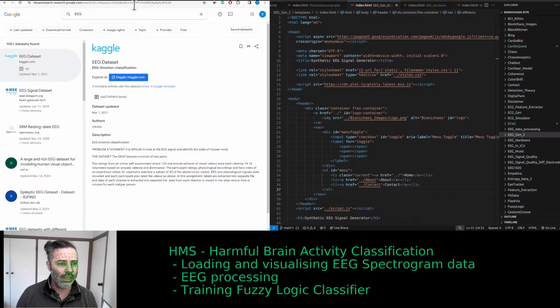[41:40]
And we're also updating, or trying to update, this old list of resources. Skip the first one. Yeah, we have those. I want to update this list of datasets. There's this dataset search. Apparently, you can even search datasets on it. Why doesn't this one have a search term already in the URL? Can have it like that.
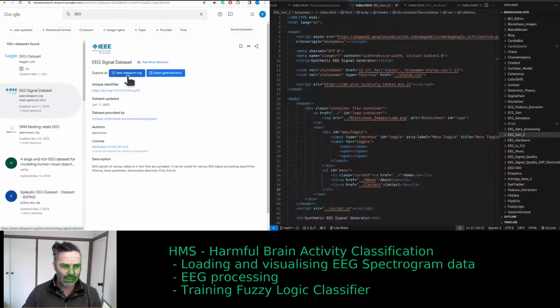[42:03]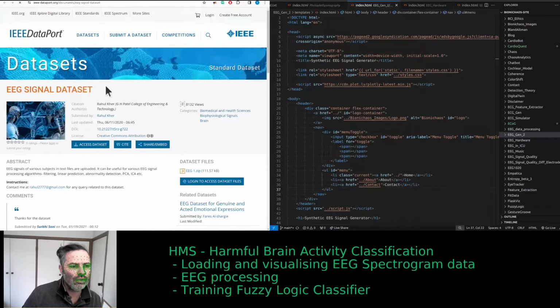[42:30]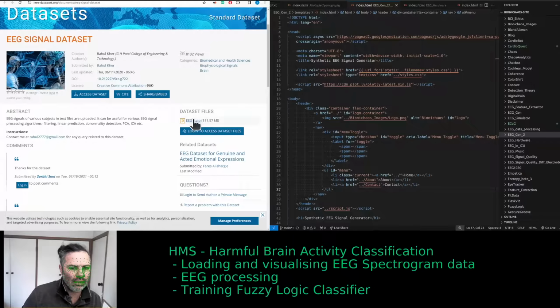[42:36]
Imagine, EEG datasets will cost a lot. Gatecoin. It has an open source license. The Kaggle one doesn't mention it, but it should be open source as well. Yeah, this is nice, that's actually being mentioned. It's from 2020. That fast. It's only 100 kilobytes. Yeah, you need to log in.
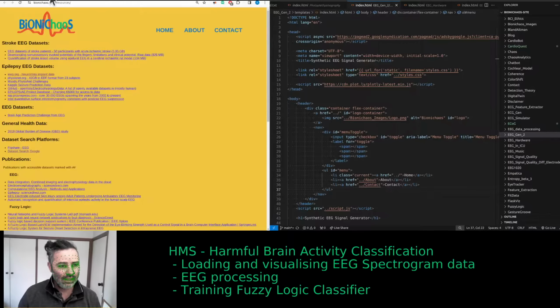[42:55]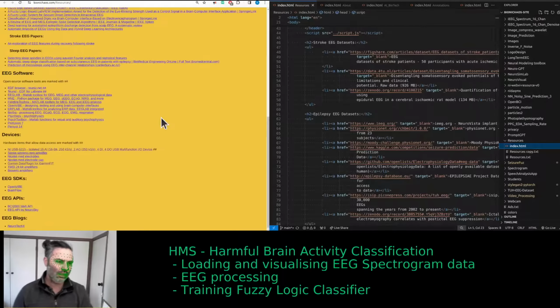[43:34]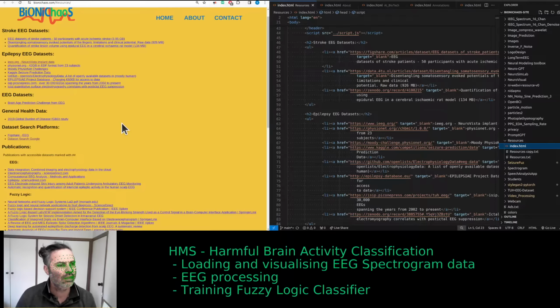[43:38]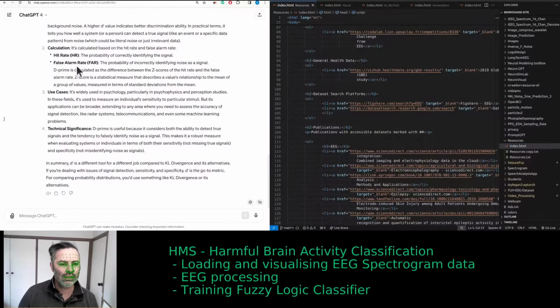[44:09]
So I want to do a list where we'll have parameters. I can do a table in HTML. Probably can. Let's go to resources. It would be nice to add a table. What should the columns be? So we'll have the name of the dataset, and then essentially things like accessibility. That will be a score depending on whether login is required or not. Things like that.
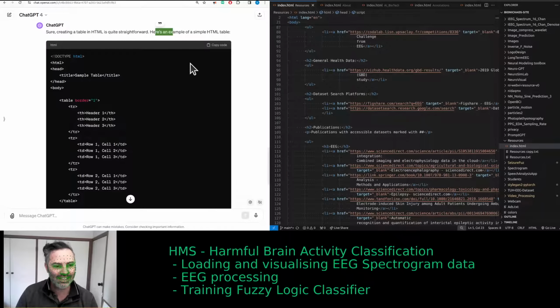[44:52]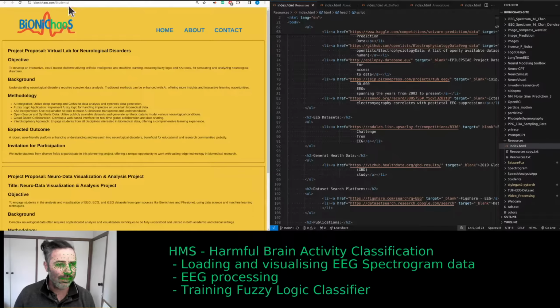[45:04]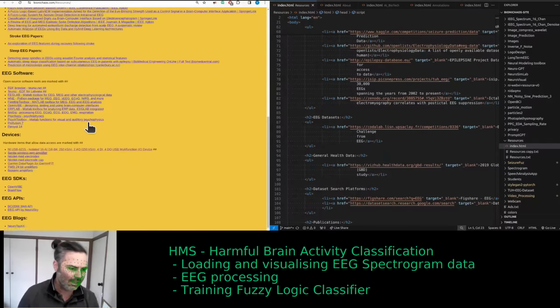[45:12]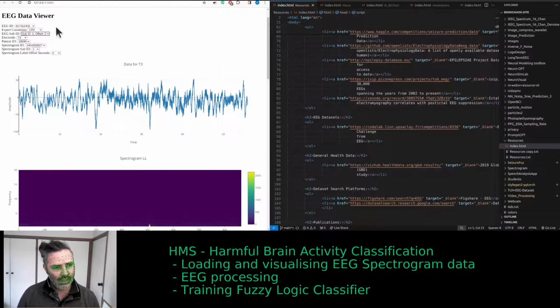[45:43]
I don't know, would it be able to? Yeah, it's a generic one. You would expect slightly more from GPT-4, but that's okay. Where should we put it? Currently we just have links to datasets. Should it include the hardware as well? No, or software? Maybe. With a dataset you could have API access. The problem with this is that I essentially have a copy of the dataset on my server.
By the way, this session is meant to be interactive, so let me know if you have any complaints, questions, suggestions.
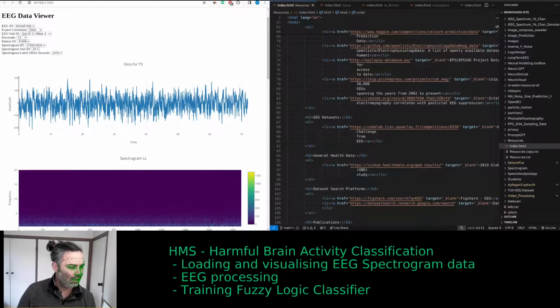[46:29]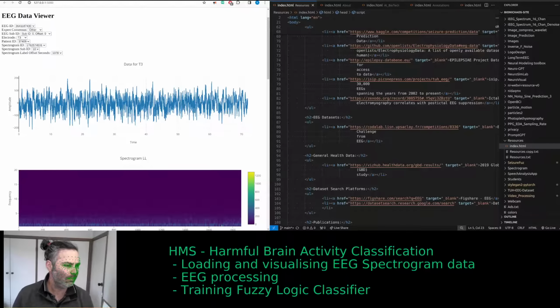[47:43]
By the way, I'm later editing those videos and they will not have the annoying music. I don't know, maybe you like the music. There's a video of me generating more of these musical masterpieces if you want to enjoy them as a standalone video slash song. Go for it. Or maybe you can make your own. That would be even better.
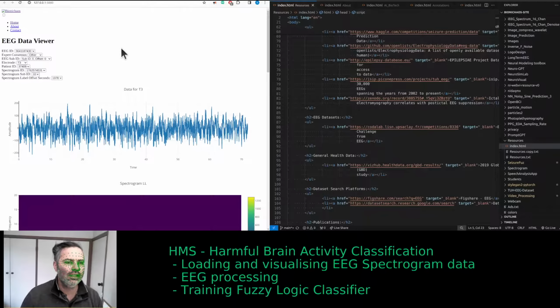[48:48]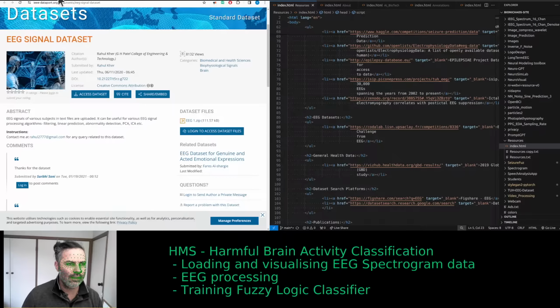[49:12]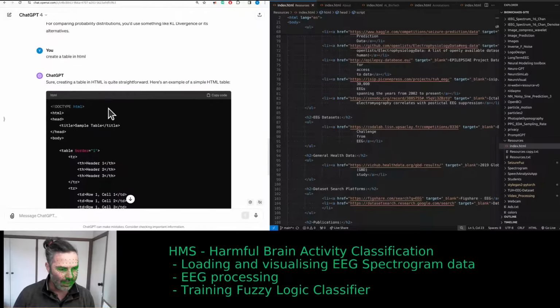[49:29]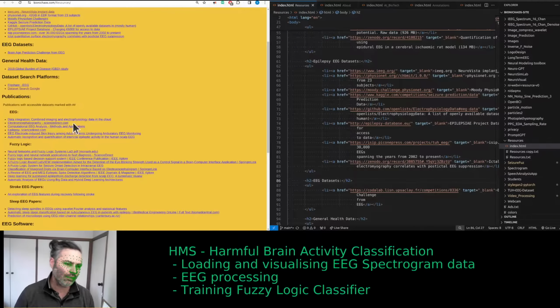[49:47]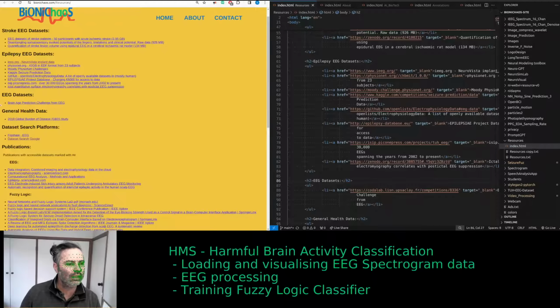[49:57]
Yeah, there's something going on there. Right, so back to the table. We have this table in HTML. Table border 1, fine. Have a dataset search platform. Yeah, let's pop it in here.
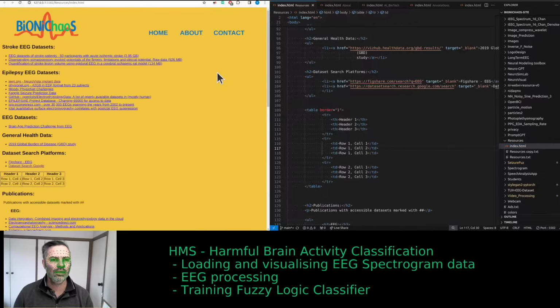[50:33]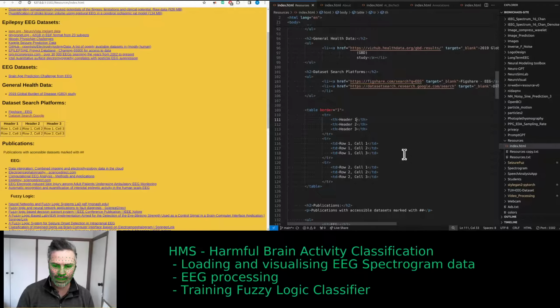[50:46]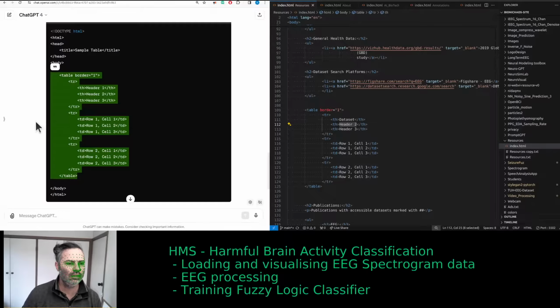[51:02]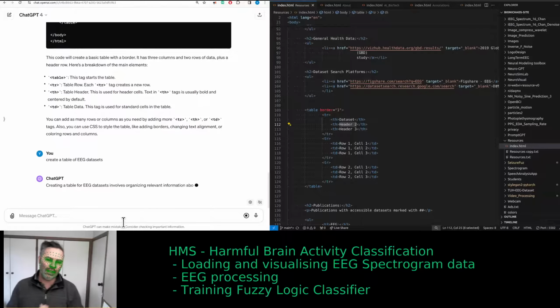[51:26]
Okay, so we have a data set. Yeah, so I want a table of EEG data sets. Right, well, not a number of subject data format. Yeah, those are really good. Those are really good suggestions.
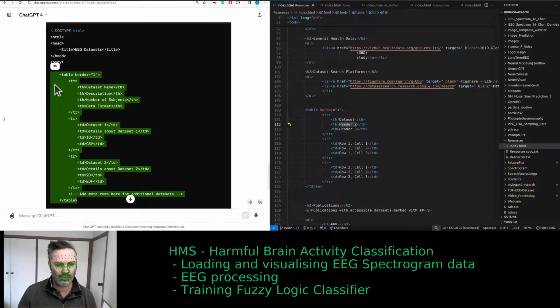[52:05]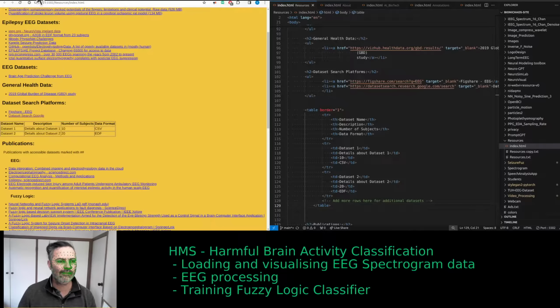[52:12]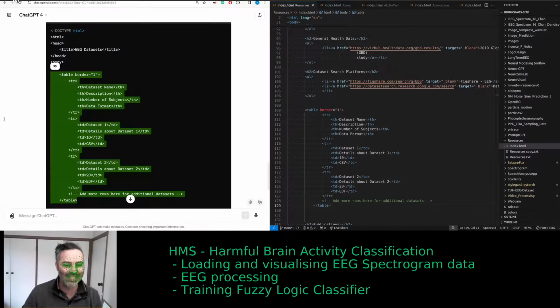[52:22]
Can you actually populate the table? Can you publish results?
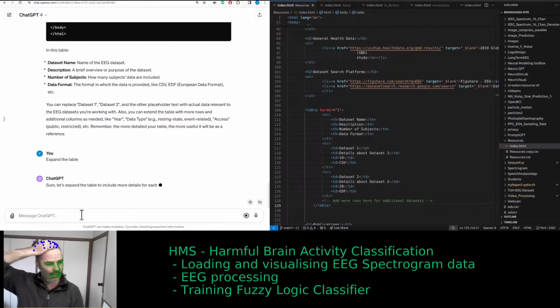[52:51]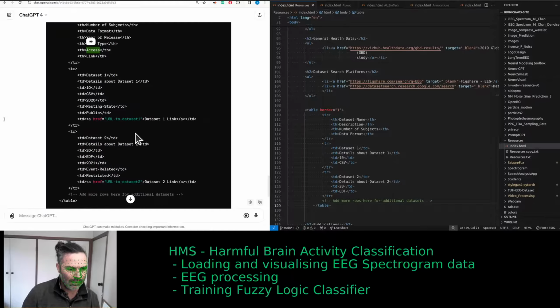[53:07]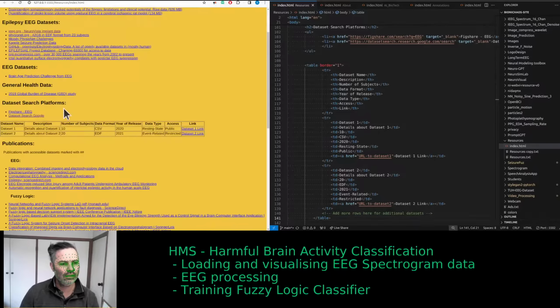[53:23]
Yeah, let's see what it has: number of subjects, data format, yeah, whatever. Data type, access, yeah, link. That's kinda important. Just give me a random example. Access: public, restricted.
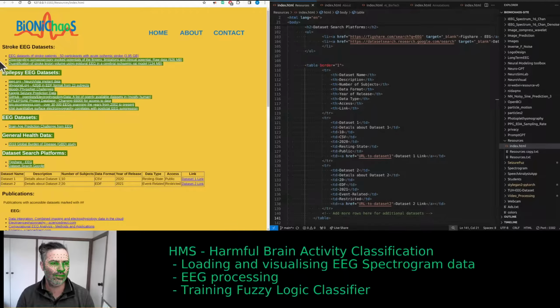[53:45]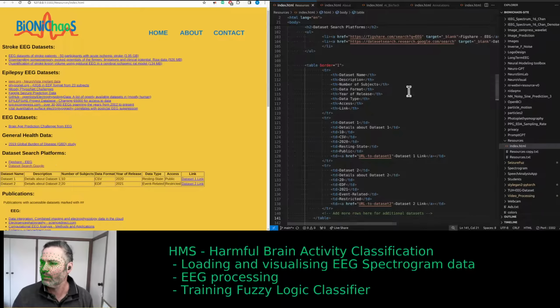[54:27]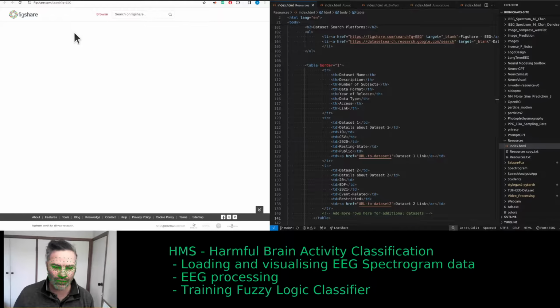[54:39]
Yes, the idea was to have stroke specific data sets, then epilepsy. Those are all EEG. Then generic EEG. General health, yeah, get rid of it. Get rid of it. To make sure these links actually still work.
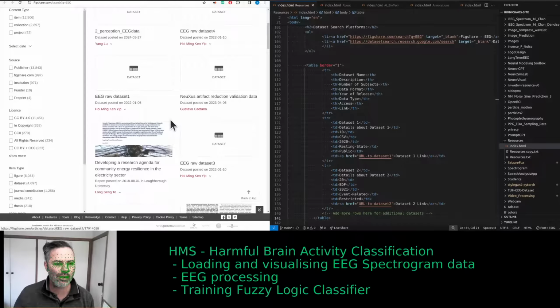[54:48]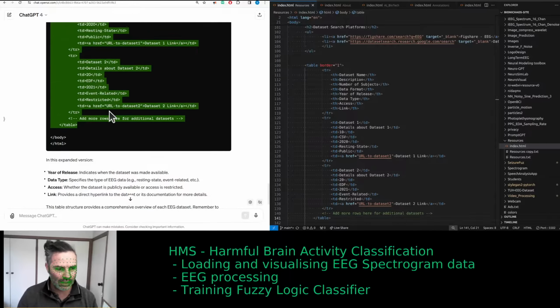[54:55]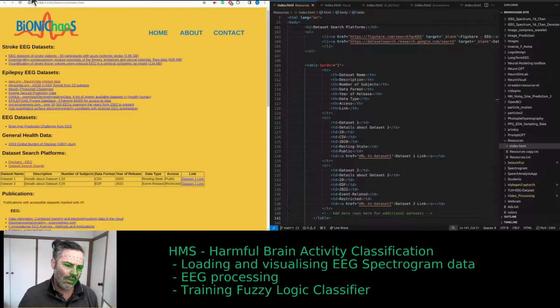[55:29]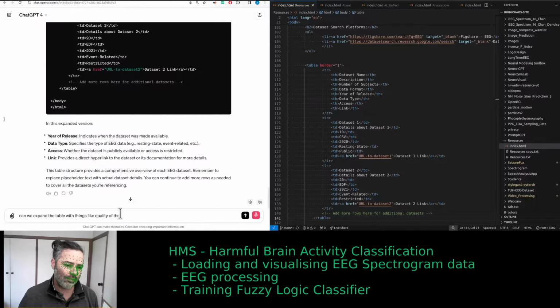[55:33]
Well, and the main thing is the quality of the data. Can we expand the table with things like quality of the data? Potentially accessibility might be more options than public or restricted. Maybe have some sort of score for accessibility.
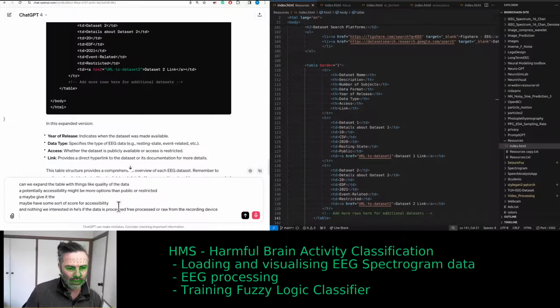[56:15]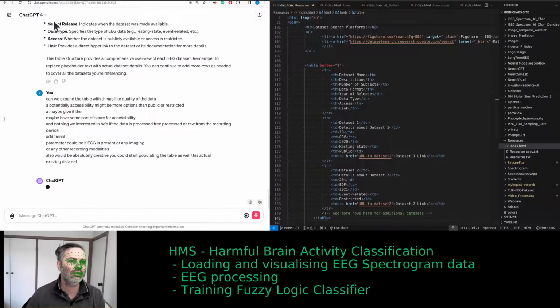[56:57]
Another thing we're interested in is if the data is processed, pre-processed, or raw from the recording device. An additional parameter could be if ECG is present or any imaging or any other recording modalities. It would also be absolutely great if you could start populating the table with actual existing datasets. Yep. We didn't provide this one yet.
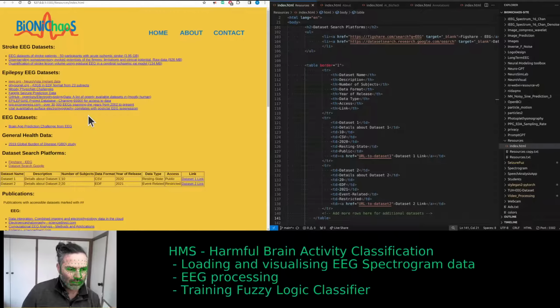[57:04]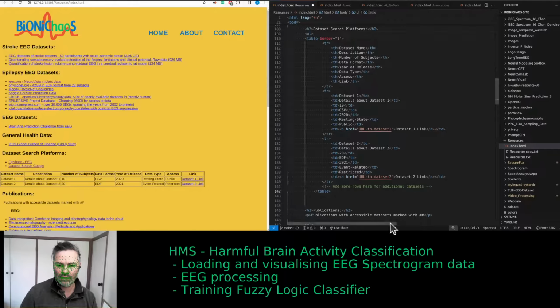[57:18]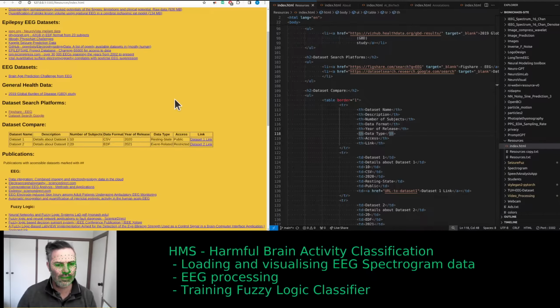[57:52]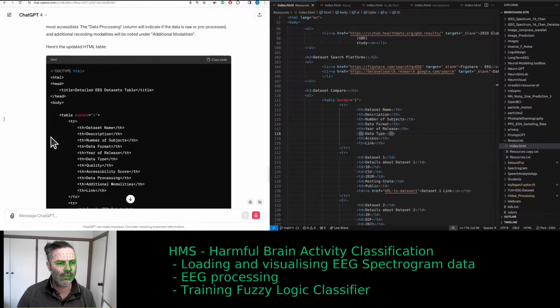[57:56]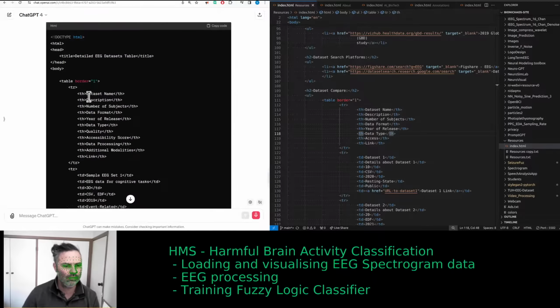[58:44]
Certainly. Expanding the table further to include the quality of data, a more nuanced approach to accessibility, and additional parameters like data processing status and presence of other recording modalities like ECG or imaging makes it more detailed and useful. Let's structure the table with these new parameters and populate it with some hypothetical examples of actual datasets. Note that for quality, we could use a simple rating system like high, medium, low. And for accessibility, we might use a scoring system like 1-10, with 10 being the most accessible. The data processing column will indicate if the data is raw or pre-processed, and additional recording modalities will be noted under additional modalities. Here's the updated HTML table.
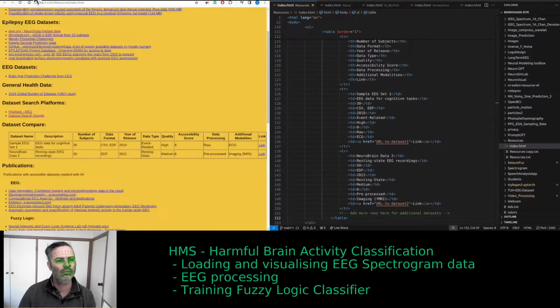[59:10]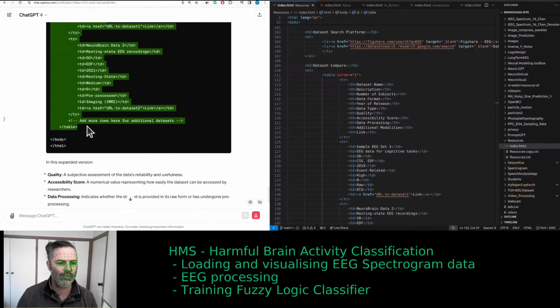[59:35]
HTML doctype html, title, detailed EEG datasets table, body. Table border 1, dataset name, description, number of subjects, data format, year of release, data type, quality, accessibility score, data processing, additional modalities, link, sample EEG set 1, EEG data for cognitive tasks, 30, CSV EDF 2019, event-related high, 8, raw ECG, a href URL to dataset 1 link. T neurobrain data 2, resting state EEG recordings 50, EDF 2021, resting state medium 6, pre-processed, imaging fMRI, a href URL to dataset 2 link. Add more rows here for additional datasets.
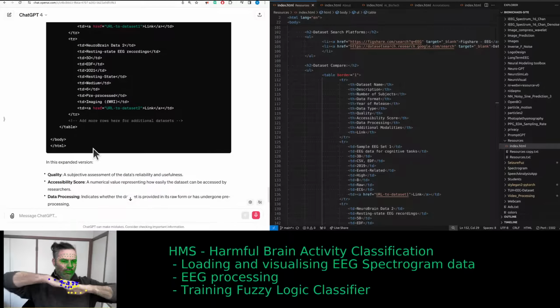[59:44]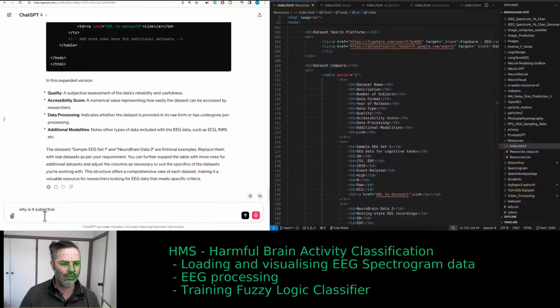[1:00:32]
In this expanded version, quality, a subjective assessment of the data's reliability and usefulness. Accessibility score, Why is it a subjective? numerical value representing how easily the dataset can be accessed by researchers. Data processing indicates whether the dataset is provided in its raw form or has undergone pre-processing. Additional modalities notes other types of data included with the EEG data, such as ECG, fMRI, etc. The datasets Sample EEG Set 1 and Neurobrain Data 2 are fictional examples. Replace them with real datasets as per your requirement. You can further expand the table with more rows for additional datasets and adjust the columns as necessary to suit the specifics of the datasets you're working with. This structure offers a comprehensive view of each dataset, making it a valuable resource for researchers looking for EEG data that meets specific criteria.
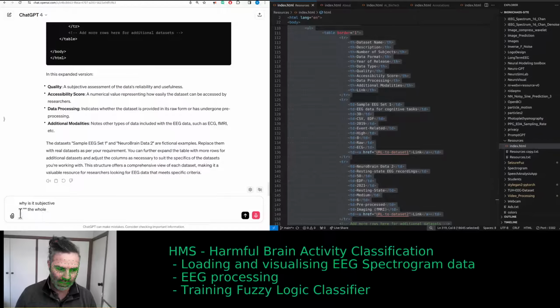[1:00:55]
Okay, let's share the whole. No, I didn't say that. It's the transcriber making assumptions. It's assuming profanities. Clear.
Why is the quality assessment subjective? This is my whole HTML page above with a bunch of links. We would like to use that to start populating the table with real datasets.
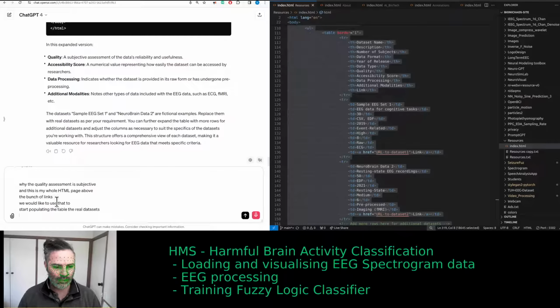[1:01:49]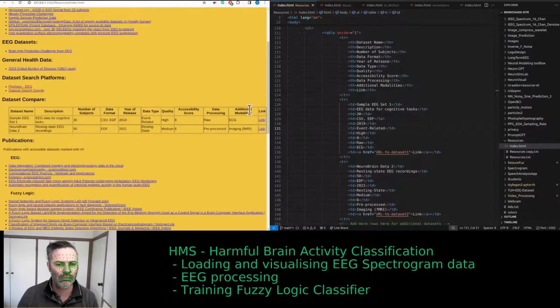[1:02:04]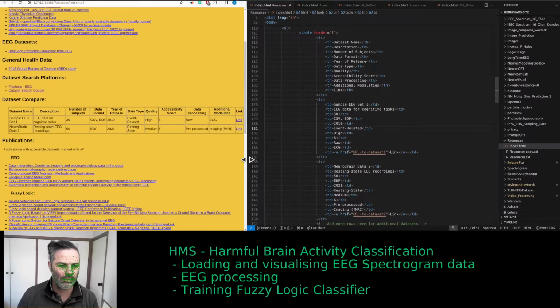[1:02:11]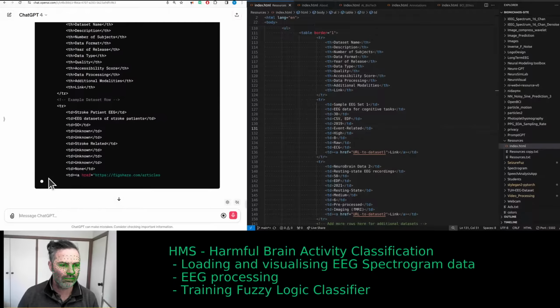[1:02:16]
Yep. Yeah, unknown is okay. Clear.
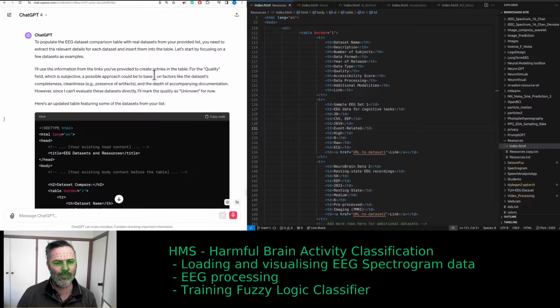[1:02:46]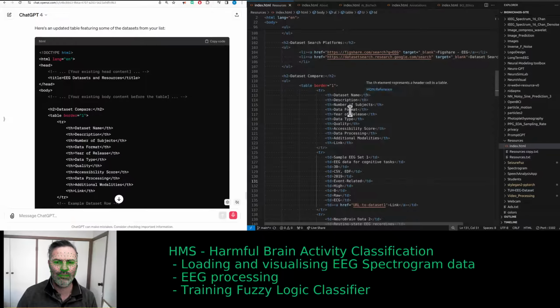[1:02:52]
To populate the EEG dataset comparison table with real datasets from your provided list, you need to extract the relevant details for each dataset and insert them into the table. Let's start by focusing on a few datasets as examples. I'll use the information from the links you've provided to create entries in the table. For the quality field, which is subjective, a possible approach could be to base it on factors like the dataset's completeness, cleanliness, e.g., presence of artifacts, and the depth of accompanying documentation. However, since I can't evaluate these datasets directly, I'll mark the quality as unknown for now.
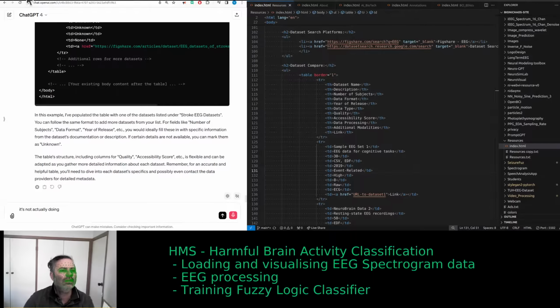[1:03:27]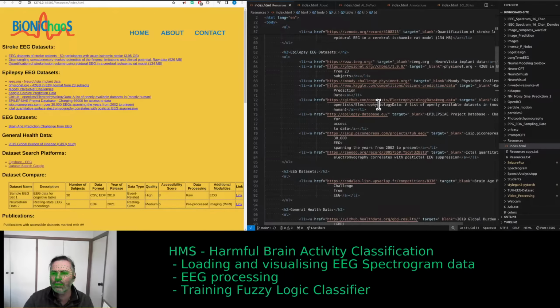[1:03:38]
Here's an updated table featuring some of the datasets from your list. HTML, doc to HTML, head, your existing head content, title, EEG datasets and resources, body, your body content before the table, dataset compare, dataset name, description, number of subjects, data format, year of release, data type, quality, accessibility score, data processing, additional modalities, link, example dataset row, stroke patient EEG, EEG datasets of stroke patients, 50, unknown, unknown.
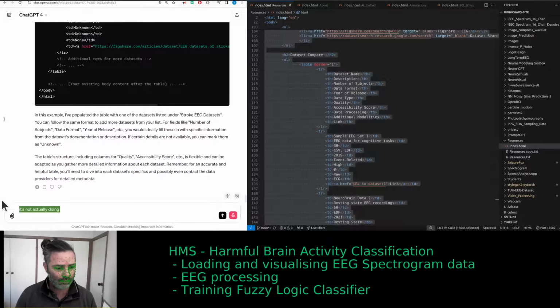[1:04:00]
Stroke related, unknown, unknown, unknown. Yeah, okay, there's a lot of unknowns. I get it. Figshare.com/datasets, EEG datasets of stroke patients, link. Additional rows for more datasets. Your existing body content after the table.
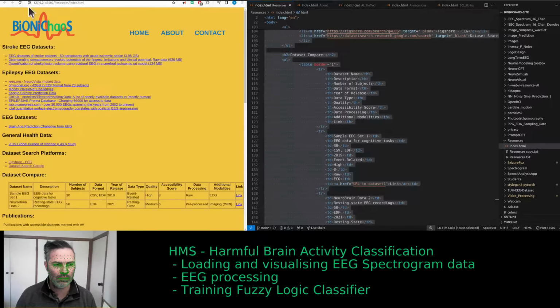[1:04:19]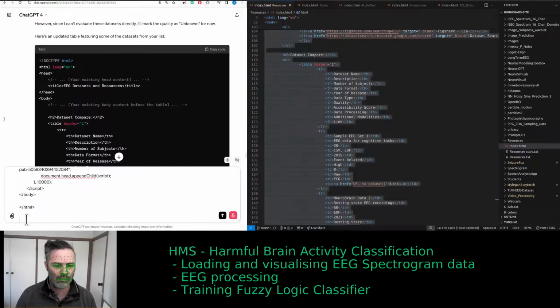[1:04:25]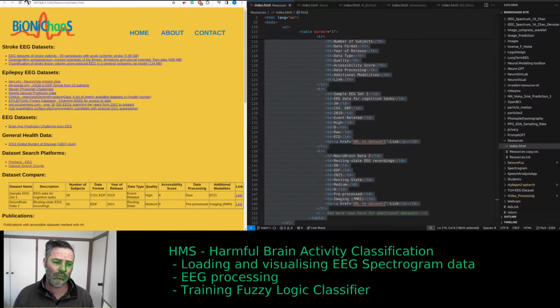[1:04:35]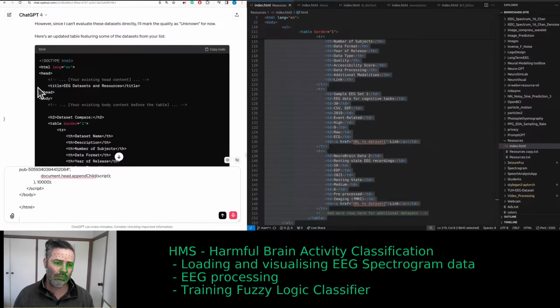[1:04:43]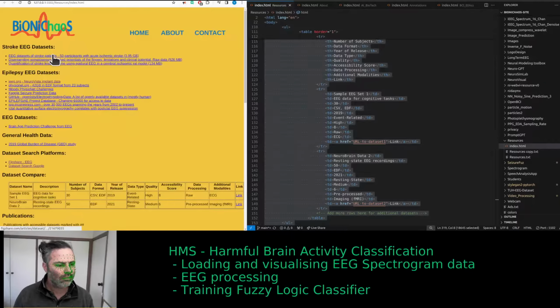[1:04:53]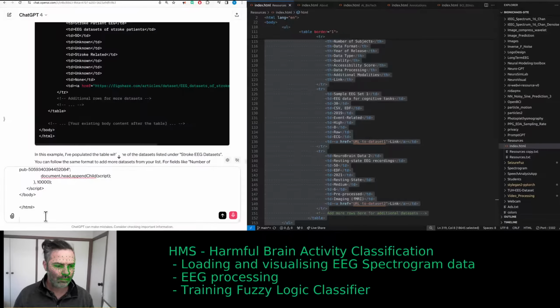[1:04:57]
In this example, I've populated the table with one of the datasets listed under stroke EEG datasets. You can follow the same format to add more datasets from your list. For fields like number of subjects, data format, year of release, etc., you would ideally fill these in with specific information from the dataset's documentation or description. If certain details are not available, you can mark them as unknown. The table's structure, including columns for quality, accessibility score, etc., is flexible and can be adapted as you gather more detailed information about each dataset. Remember, for an accurate and helpful table, you'll need to dive into each dataset's specifics and possibly even contact the data providers for detailed metadata.
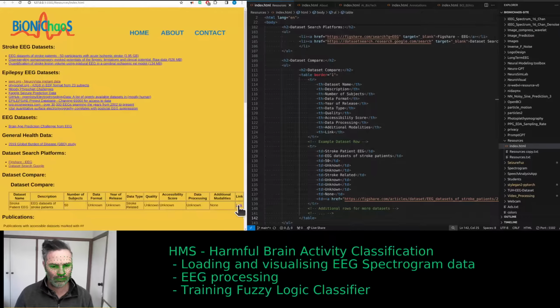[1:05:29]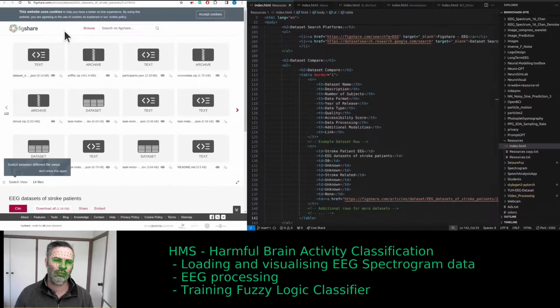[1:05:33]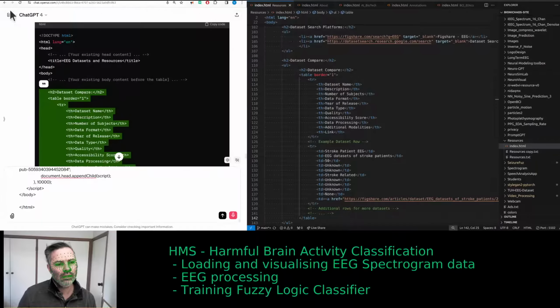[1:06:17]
I will need to add the license as well. We also need to have a column if there's an API available. I mean, yeah, it's a tricky business, isn't it? Because if we have to download, then we have to store the data on a server, which will be costly. I mean, if I can recover the electricity cost, that would be great.
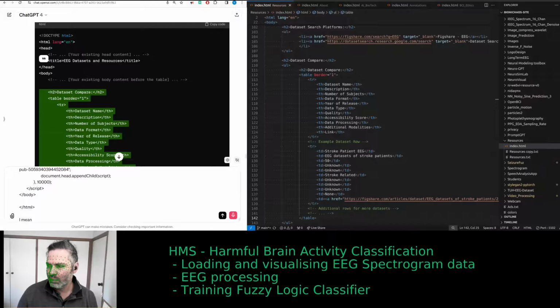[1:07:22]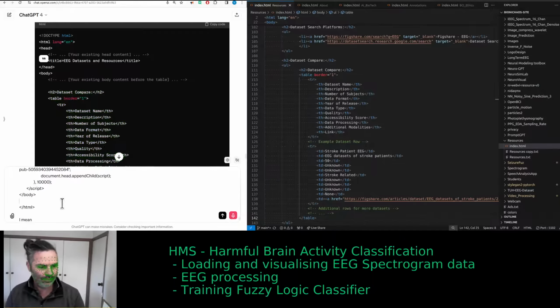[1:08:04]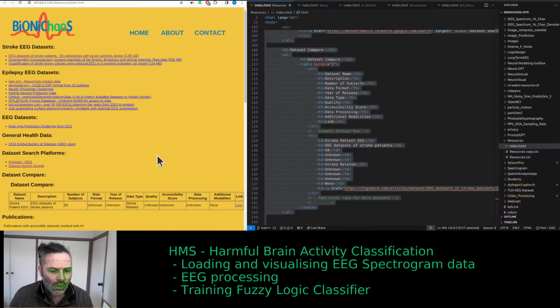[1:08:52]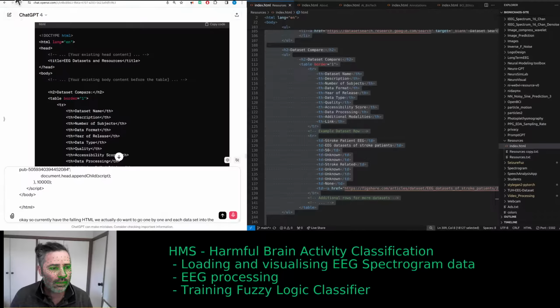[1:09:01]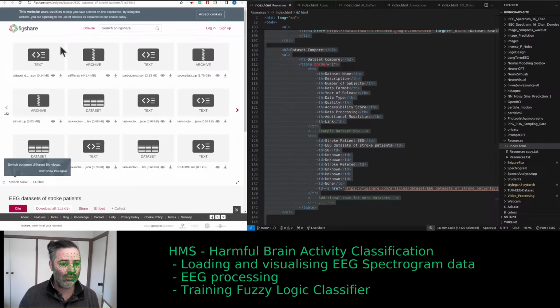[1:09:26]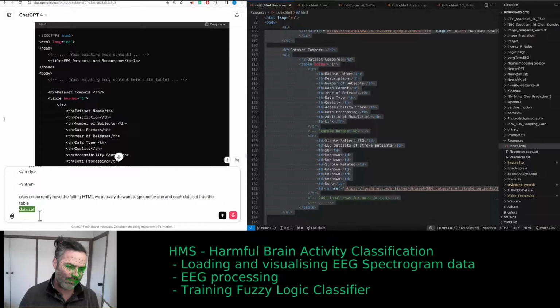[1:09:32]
Okay, so we currently have the following HTML. We actually do want to go one by one and add each dataset into the table. Can you use the links provided to fetch the necessary data from the description of the dataset? Can you actually use the links provided in the HTML to fetch the necessary data?
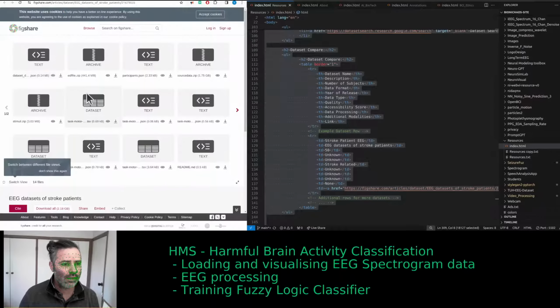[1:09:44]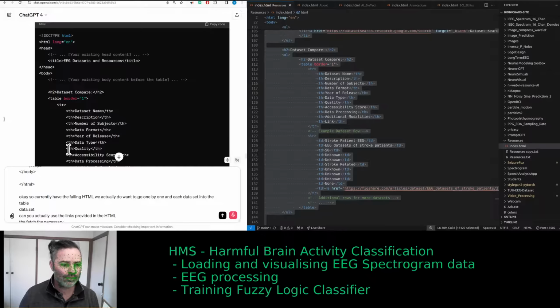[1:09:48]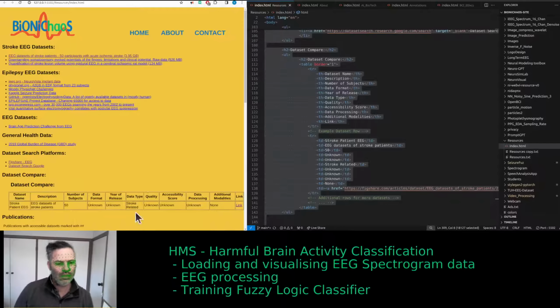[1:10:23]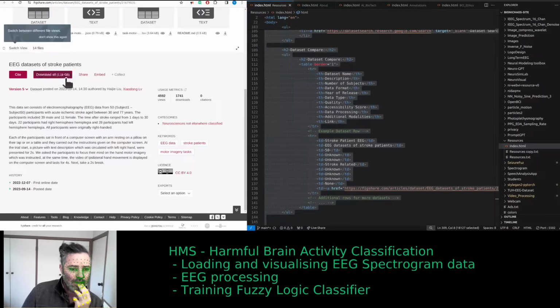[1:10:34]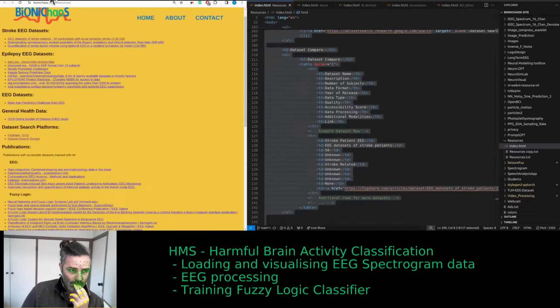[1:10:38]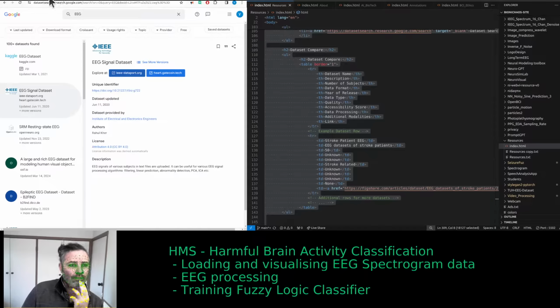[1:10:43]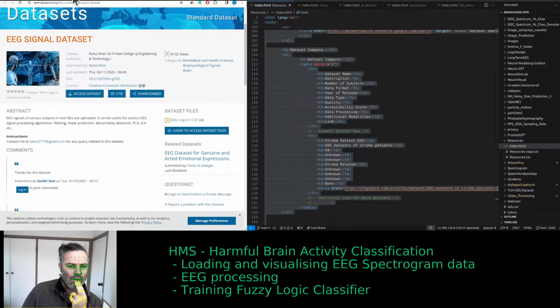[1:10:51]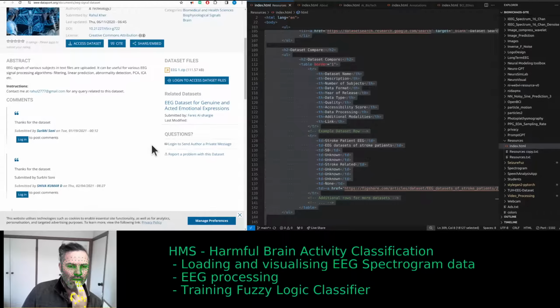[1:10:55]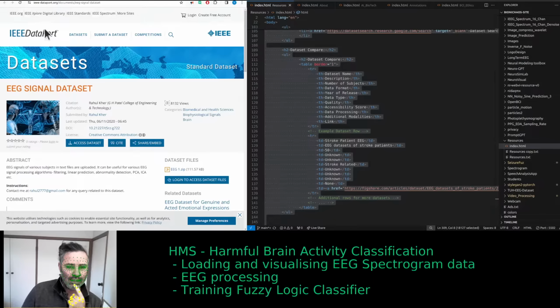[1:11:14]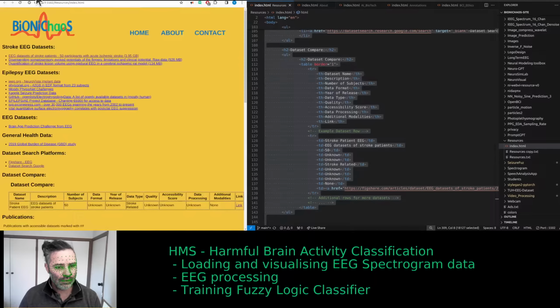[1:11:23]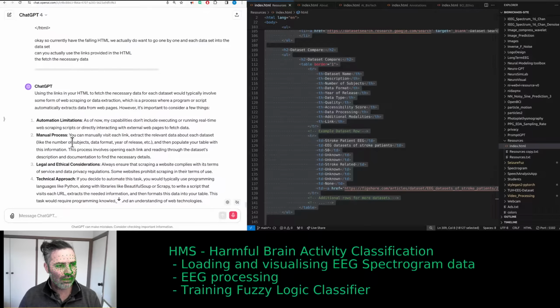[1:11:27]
We also would like to add or change the column names. We would like to include the license type. Now, actually, the accessibility should cover it, shouldn't it? Should be EEG or something. This is where it says you can supposedly access the data, but then it says log in to access the data files. Log in. Yeah, the usual thing with IEEE. Everything is either behind the paywall or login or who knows what.
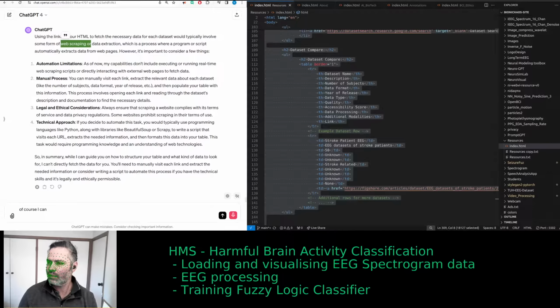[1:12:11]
Using the links in your HTML to fetch the necessary data for each dataset would typically involve some form of web scraping or data extraction, which is a process where a program or script automatically extracts data from web pages. However, it's important to consider a few things. 1. Automation limitations. As of now, my capabilities don't include executing or running real-time web scraping scripts or directly interacting with external web pages to fetch data. 2. Manual process. You can manually visit each link, extract the relevant data about each dataset, like the number of subjects, data format, year of release, etc., and then populate your table with this information. This process involves opening each link and reading through the dataset's description and documentation to find the necessary details.
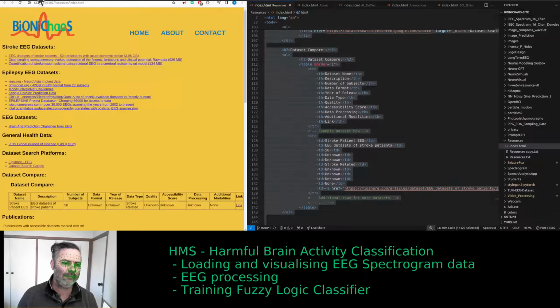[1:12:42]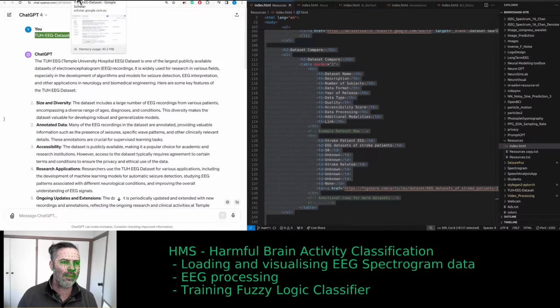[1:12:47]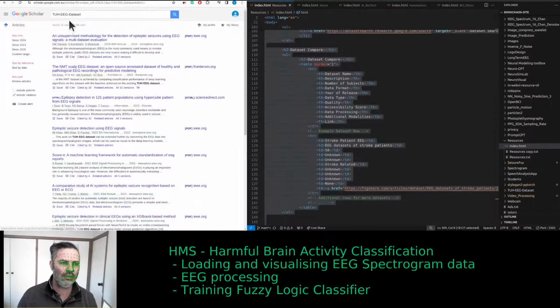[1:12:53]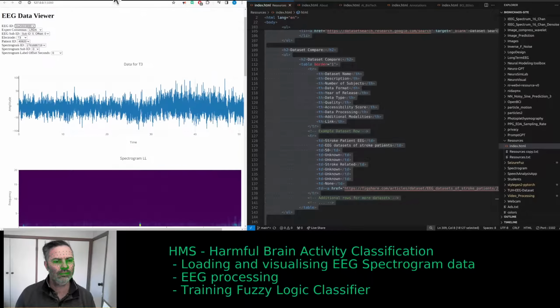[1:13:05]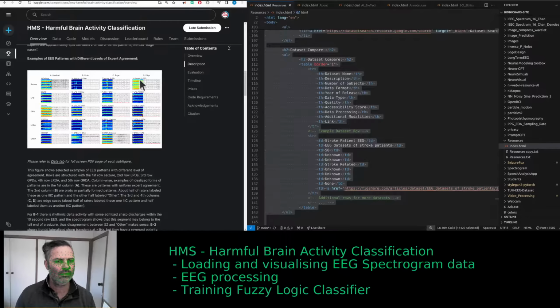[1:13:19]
3. Legal and ethical considerations. Always ensure that scraping a website complies with its terms of service and data privacy regulations. Some websites prohibit scraping in their terms of use. 4. Technical approach. If you decide to automate this task, you would typically use programming languages like Python, along with libraries like Beautiful Soup or Scrapy, to write a script that visits each URL, extracts the needed information, and then formats this data into your table. This task would require programming knowledge and an understanding of web technologies. So, in summary, while I can guide you on how to structure your table and what kind of data to look for, I can't directly fetch the data for you. You'll need to manually visit each link and extract the needed information, or consider writing a script to automate this process if you have the technical skills, and it's legally and ethically permissible.
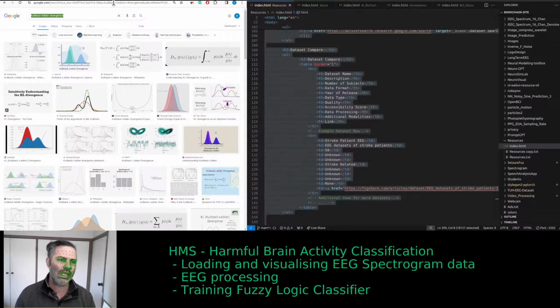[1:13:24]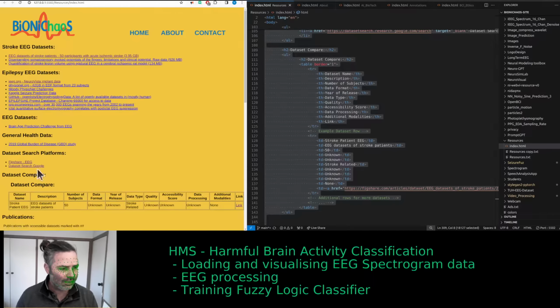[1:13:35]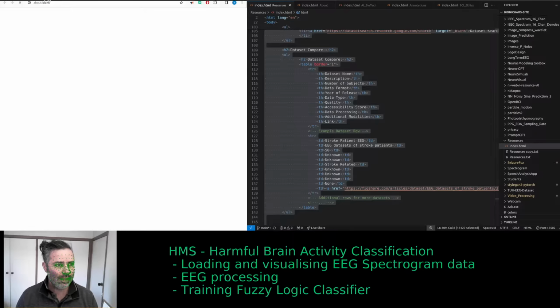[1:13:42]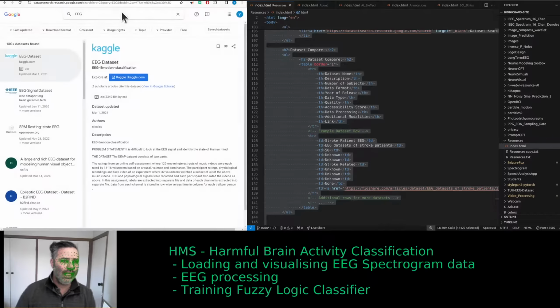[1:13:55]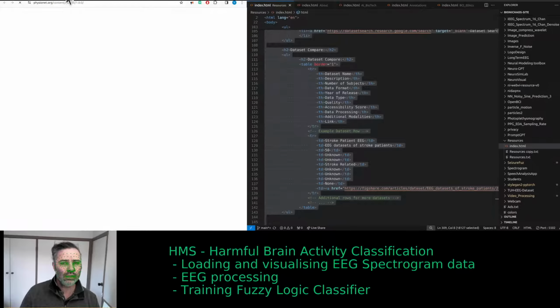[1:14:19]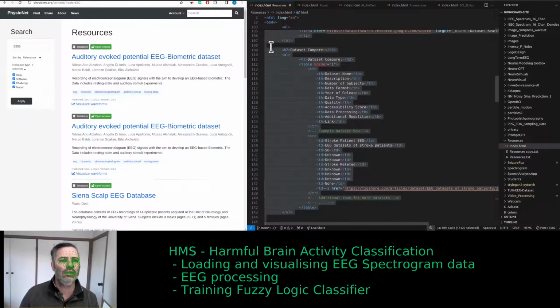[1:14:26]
Well, the other thing we could scrape, it's actually probably better if we scrape Google Scholar. Then we also have this search. Yeah, we're happy with these two searches, Figshare and the dataset search by Google, for which I forgot to enter EEG. Yeah, PhysioNet has quite a few, and I'm sure PhysioNet will have a search as well. A dataset search platform.
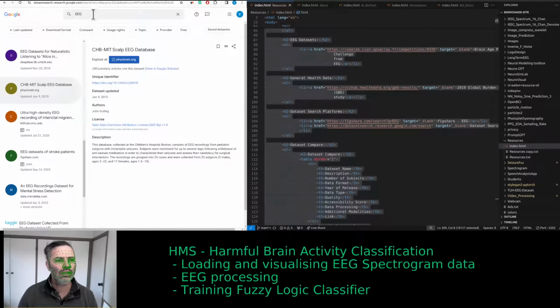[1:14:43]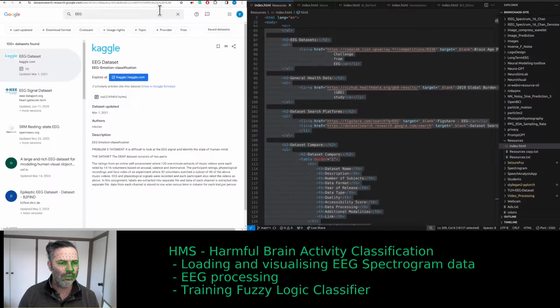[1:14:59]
Doc ID. Do I really need it? I'll remove it. Yeah, that works. I'll just place a dataset search by Google.
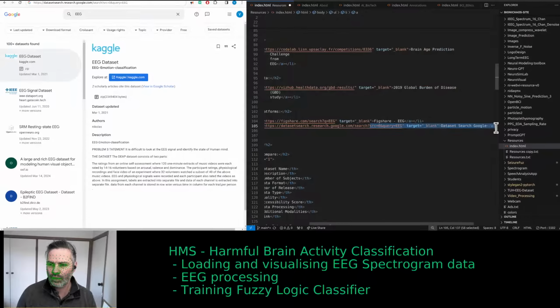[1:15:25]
Well, they're all EEG searches. Just make some
Someone's saying hello, and I don't know why it's not in my... Hi, Vikram. I don't see it in the YouTube app. It's a bit unusual to see it on my streaming software. Ah, now I do. I need to refresh the app, which kind of defeats the purpose of having an app, isn't it?
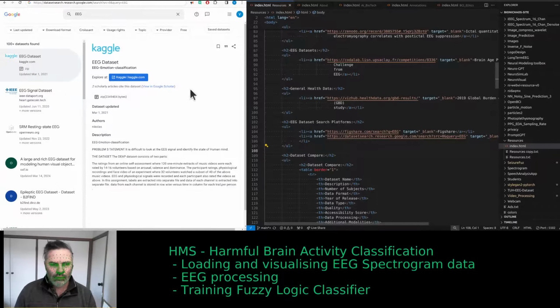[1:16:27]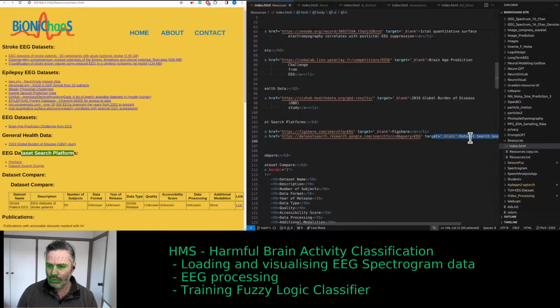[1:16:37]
Okay, so we have this EEG dataset search. We have Figshare. Hey, Google, just put Google dataset search.
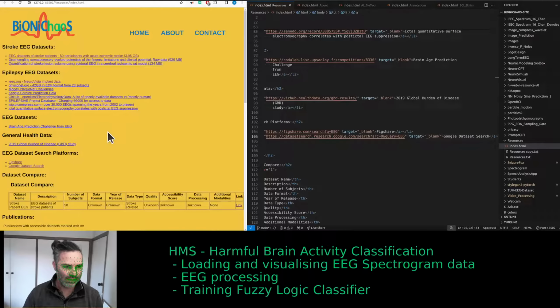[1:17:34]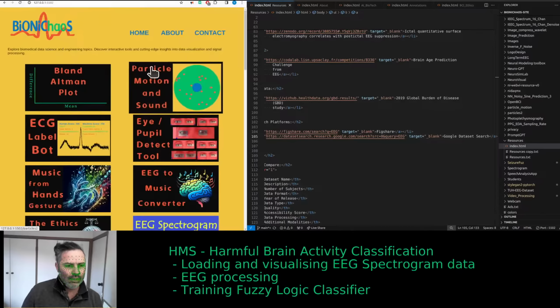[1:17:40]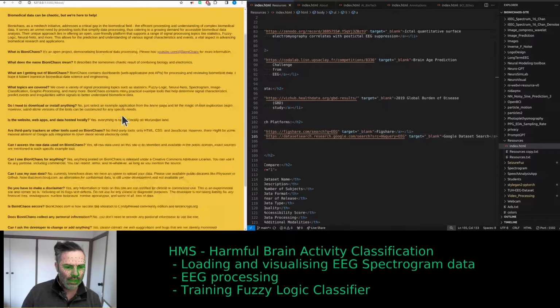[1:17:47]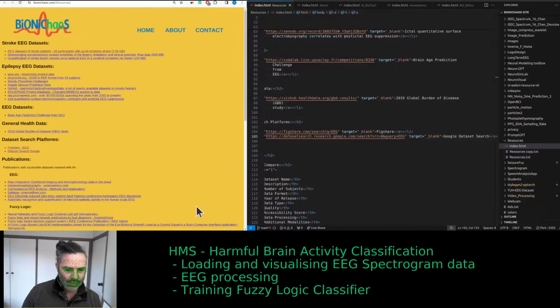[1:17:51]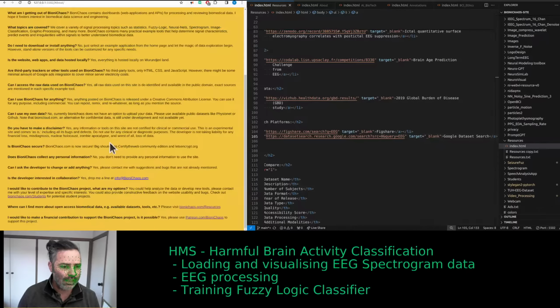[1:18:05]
Vikram is asking, what am I doing? That's a good question. We are updating the site on bionichaos.com. In the about section, there is a resources page, and currently it just has a list of all these datasets, mainly for EEG. We could add the ECG to it as well. We're making a table.
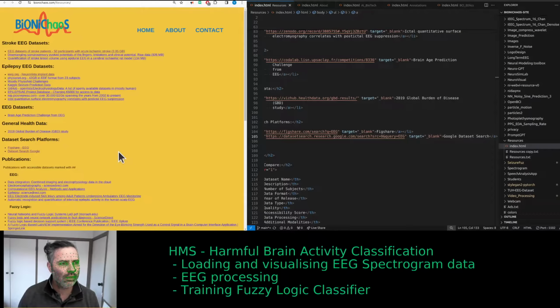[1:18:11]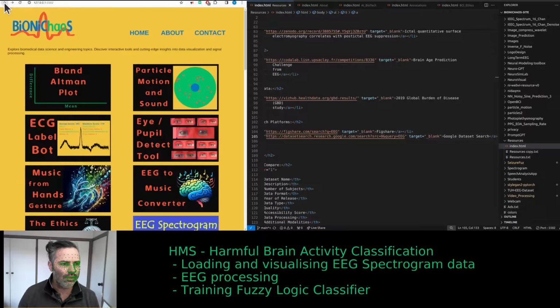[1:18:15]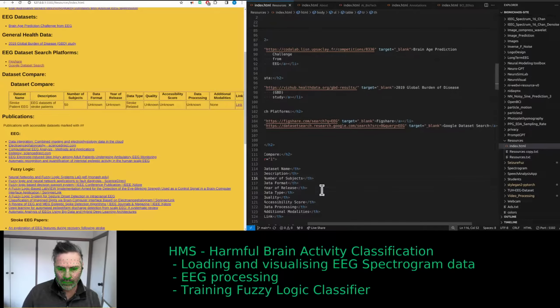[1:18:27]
Table. No, come on, don't do that. It's the original. Yeah, this table with a dataset comparison, and we have number of subjects. Yes, it's important. Date, data format, year of release, data type. Data type should be more in terms of the file format. Data processing, if that is processed, pre-processed, or raw. Additional modalities. So normally if you have EEG data, it might have ECG in it as well.
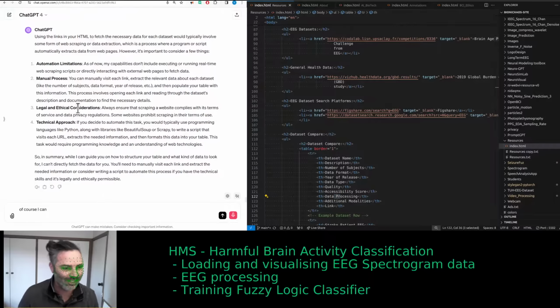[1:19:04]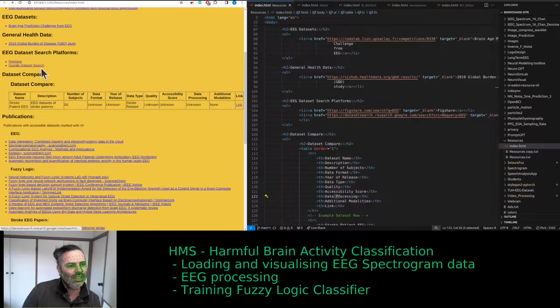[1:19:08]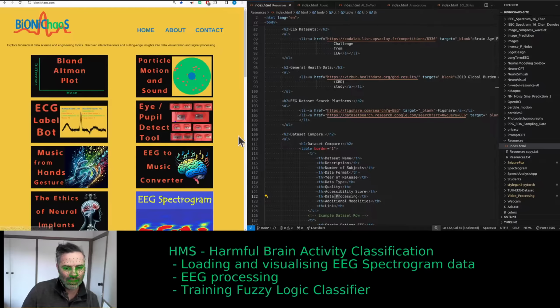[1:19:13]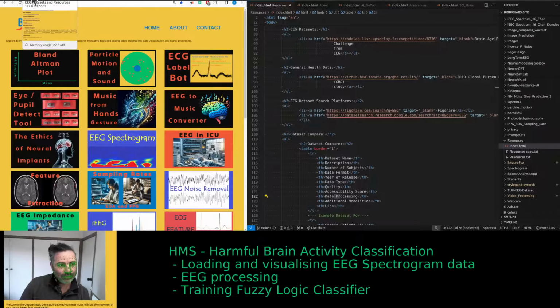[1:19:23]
Will it teach me programming? I don't know programming. I use GPT-4 to program. This is what all the tools on Bionic Chaos were made using, GPT-4 and GitHub Copilot. So they are really great at teaching you how to program, or do the programming for you, if you know which one.
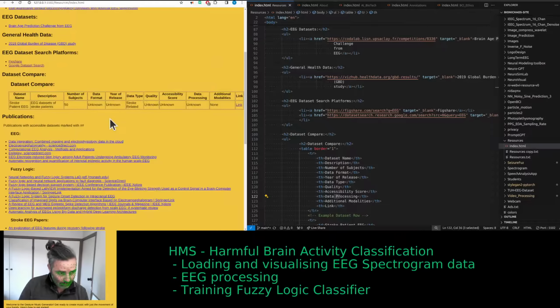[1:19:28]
Do I have this dataset compared twice? I don't need it twice, do I? Right, it's better.
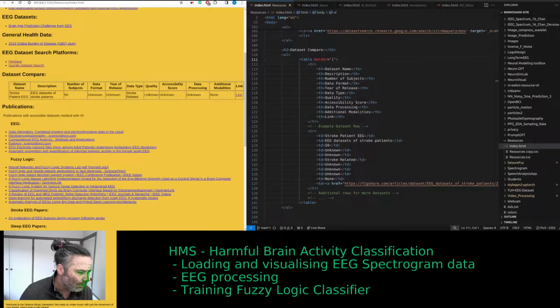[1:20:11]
So yes, unfortunately, I can play some music for you as well, if you like it or not like it. You can actually take the code for this one and regenerate it and make the musical scale something that sounds better to you. It's on the website as well. And why on... Oops. Yeah, that's when I'm scaling the window. Should have been fixed now. Yeah, okay. Just kidding.
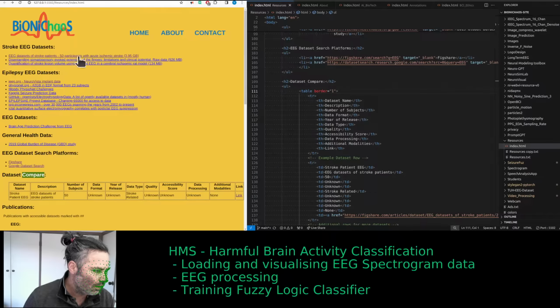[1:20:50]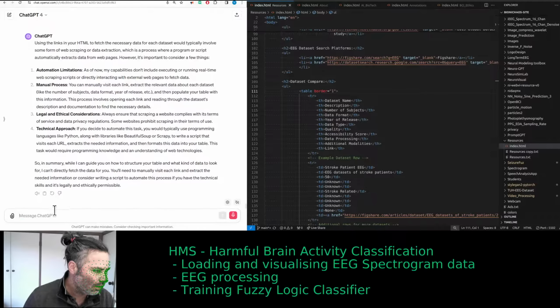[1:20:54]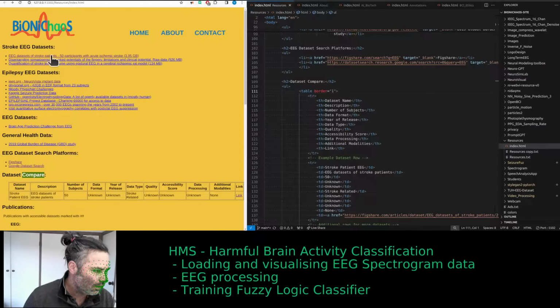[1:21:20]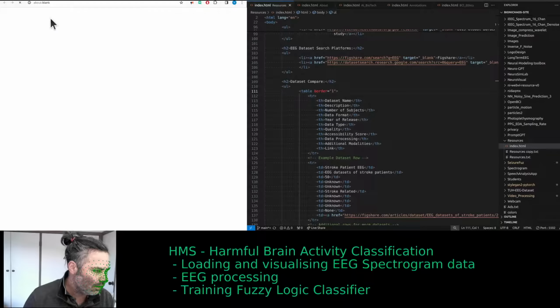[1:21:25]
So back to this dataset comparison. It's suggesting we actually have to, yeah, so the robot is being a bit lazy. It doesn't want to generate HTML code for us. Tells us we actually need to go each link one by one and scrape the data. I don't know how to do it. We could do it manually because we want to learn about each dataset anyway. But it could be good if you could give a summary and add the data into the table.
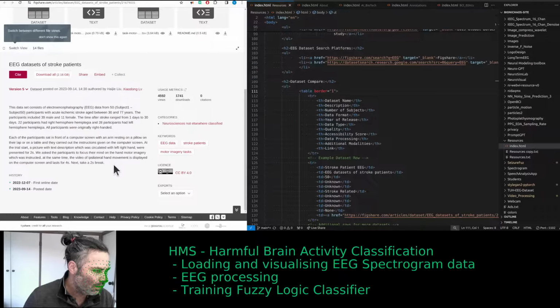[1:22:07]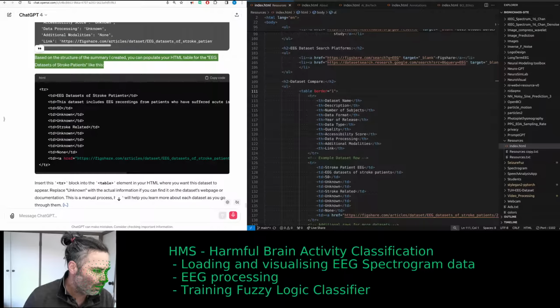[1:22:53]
Yep. Is it 50 patients? It is. Let's see if it's actually scraping the website, or is it taking it from my HTML? Don't like when it starts analyzing stuff on the server. Just wanted to generate text.
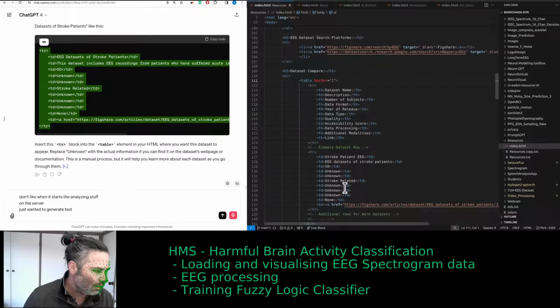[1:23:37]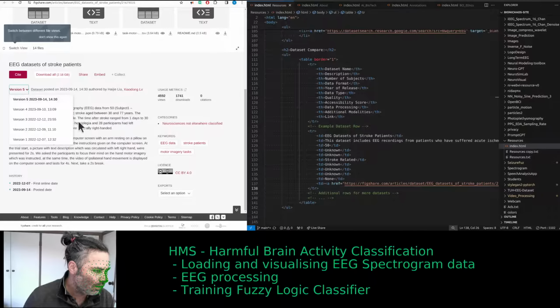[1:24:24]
Yes, we already have all that. Most of it. And the link actually works. Yes. Why are there different versions of it? Doing motor imagery tasks. Can scrape the keywords. Oh, that's exporting the citation for it.
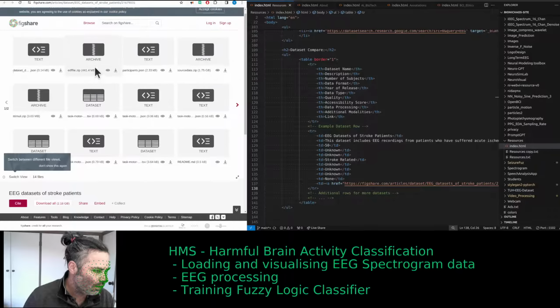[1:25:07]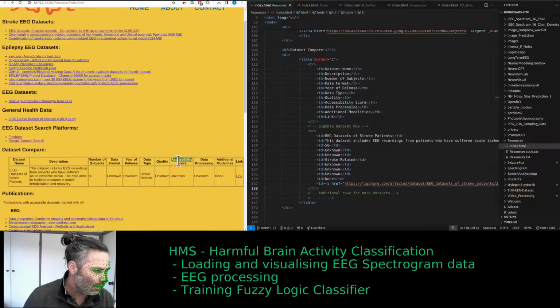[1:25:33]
Then the other question is if there is an API for it or not. It's a JSON file. That's the description. Can we just download stuff? Yes, we can. So that's a thumbs up for accessibility. We didn't need to log in. So over here, accessibility. Can supposedly download that without login.
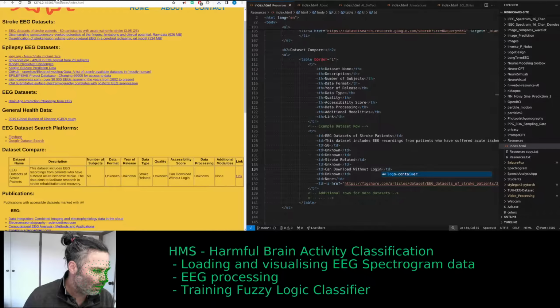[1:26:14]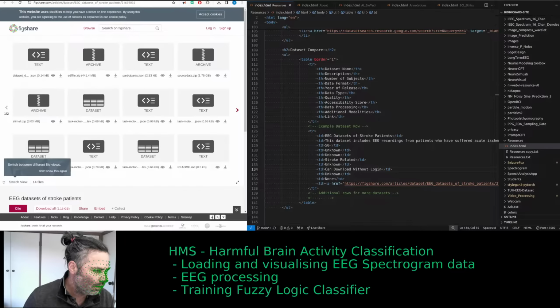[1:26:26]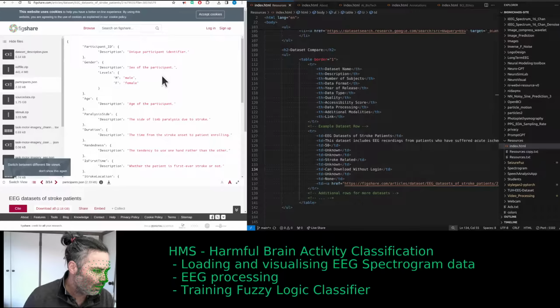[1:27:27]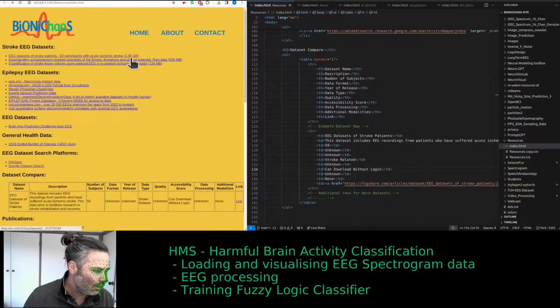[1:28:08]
Yeah, there's not much in that JSON file. That's for sure. Right, so those are EDF. Supposedly EDF files. Can view the file. Details, just one of the patients. Yeah, let's continue for now and get back to it. We have to.
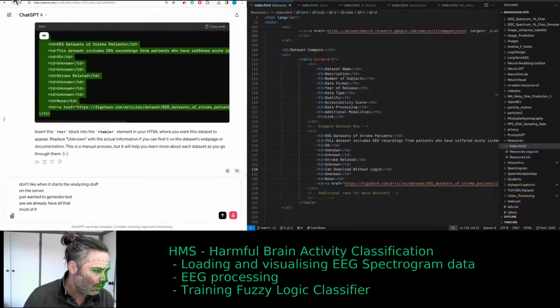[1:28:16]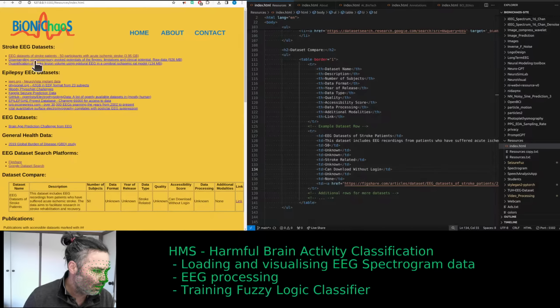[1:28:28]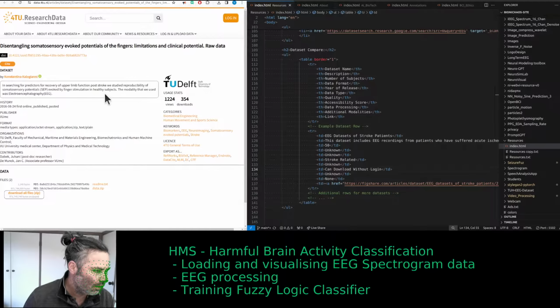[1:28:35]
Download all files from some unknown website. Do you want to do it? What's this license? General terms of use.
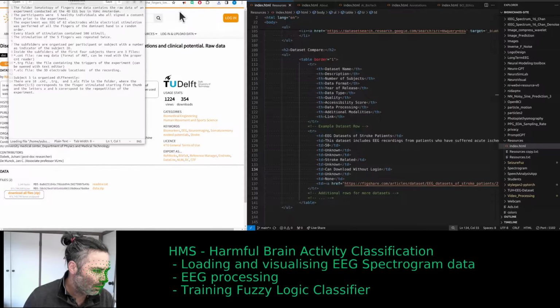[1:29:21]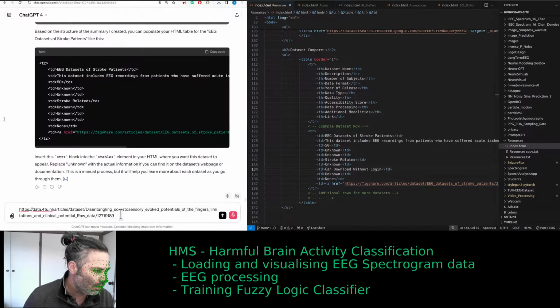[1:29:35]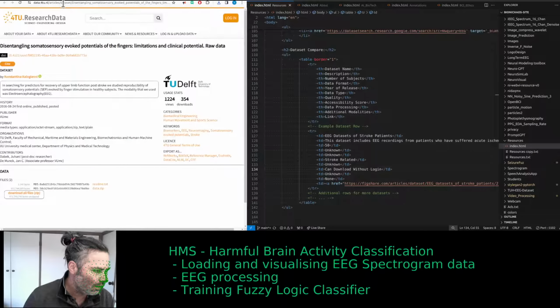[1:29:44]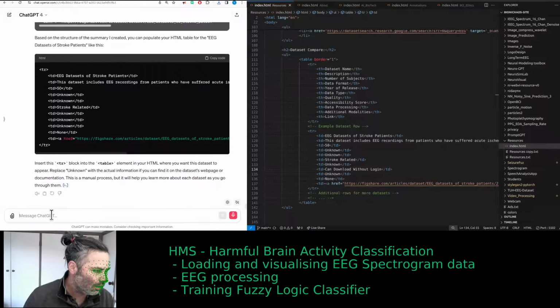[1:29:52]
Okay, can we add a second entry in the table? In the table, clear. Can we add a second entry in the table? We have this link and the following information in a text file below.
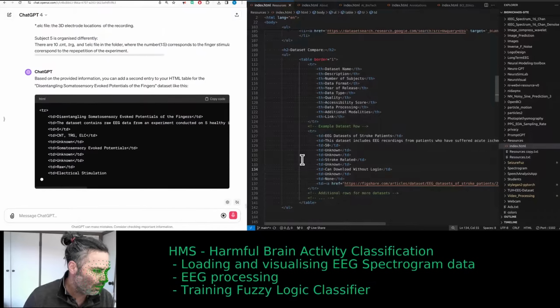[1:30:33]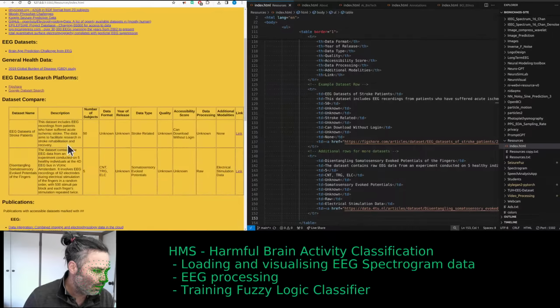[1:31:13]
That's 5 patients. That's correct. 5 healthy individuals. It's a bit odd when they record from healthy subjects, because what makes it a stroke dataset? Electrical stimulation.
Yeah, I'm not sure if it should say can download without the login, considering we haven't actually downloaded the whole dataset. Yes, quality unknown. Well, we wouldn't know until we actually get the data.
So yes, as you can tell, this might be a long-term project. But if anyone wants to help out, more than happy to collaborate on this.
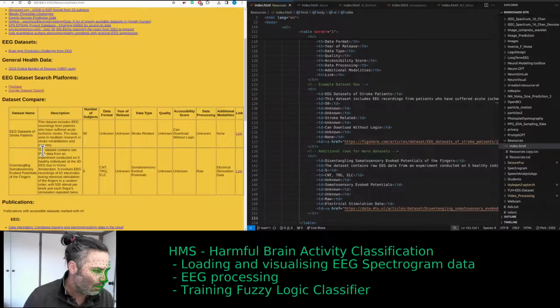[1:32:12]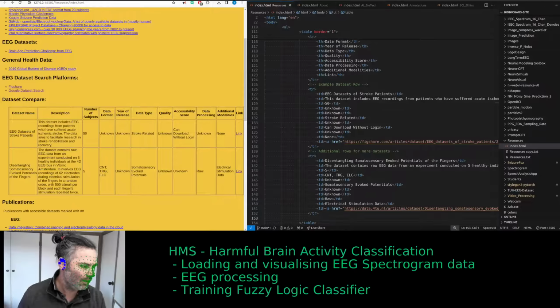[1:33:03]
Oops. Someone told me my camera is frozen. Is my camera frozen? Okay, it's unfrozen now. It's minimizing that window. It doesn't help. Okay, this was a warm-up stream today because we haven't streamed for a while.
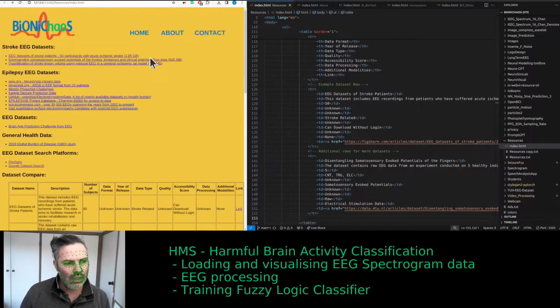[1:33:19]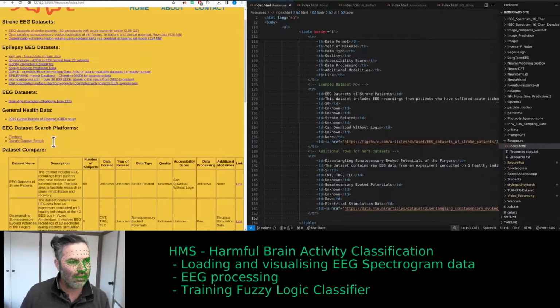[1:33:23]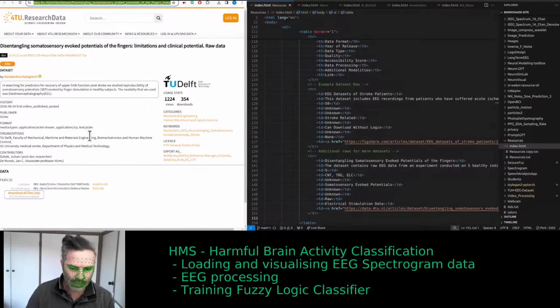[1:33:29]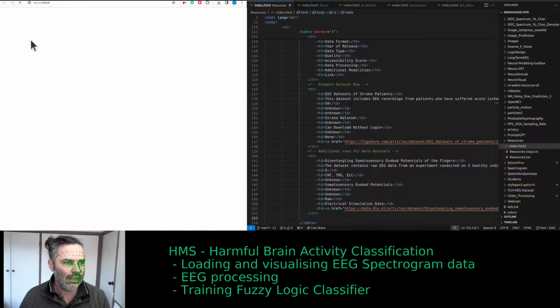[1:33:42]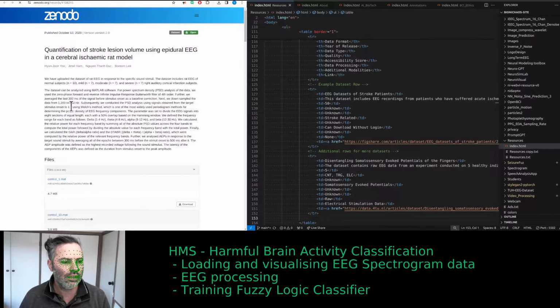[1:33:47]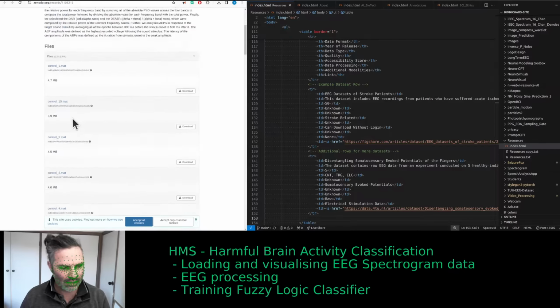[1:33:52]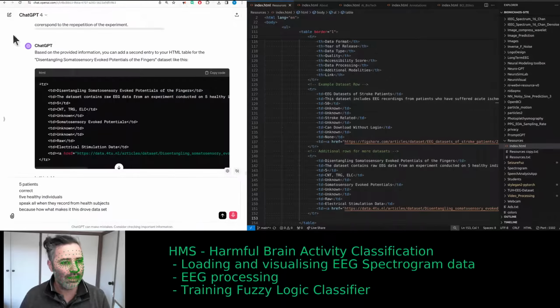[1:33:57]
Just go for the next one, then we'll correct it later. Make mistakes, then correct at a later stage. Oh, MATLAB files is not great. Well, it's okay. Python can parse mat files.
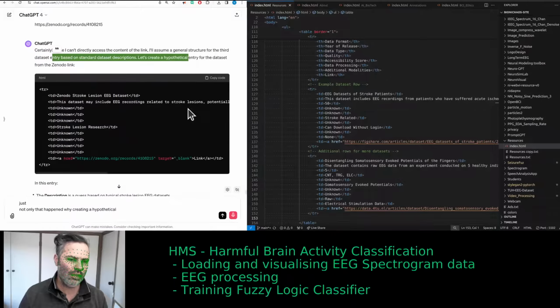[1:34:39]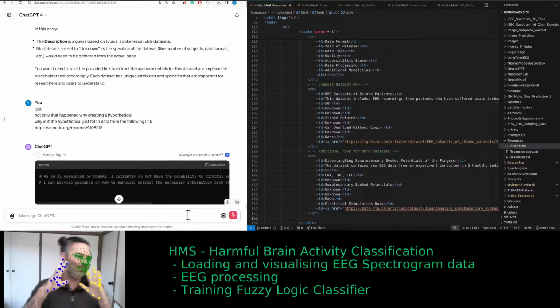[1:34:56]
Clear. Can you add a third entry into the table using the following link? Yep. Let's see if we can just... No, I don't need a hypothetical. Why creating a hypothetical? Why is it a hypothetical? Just fetch data from the following link. What? I'll play some music in the meantime.
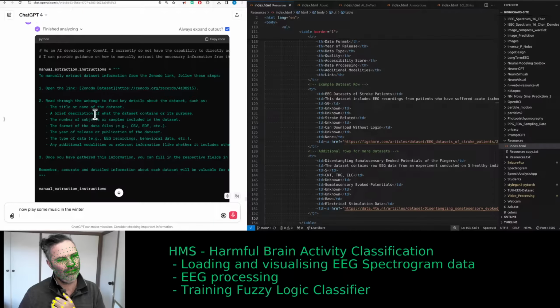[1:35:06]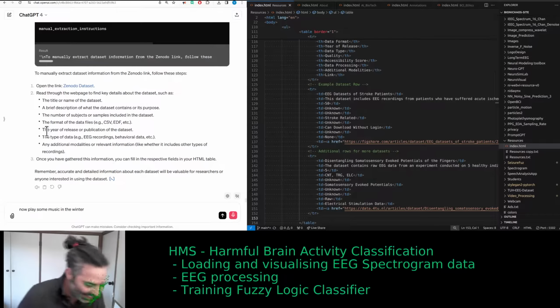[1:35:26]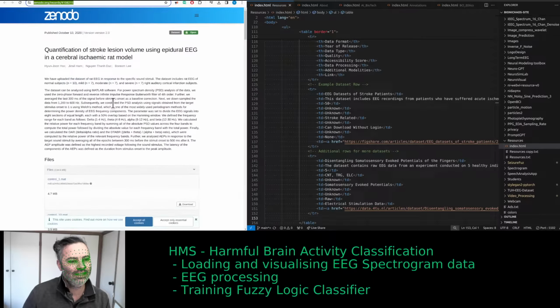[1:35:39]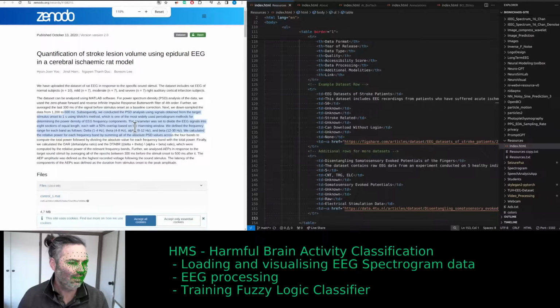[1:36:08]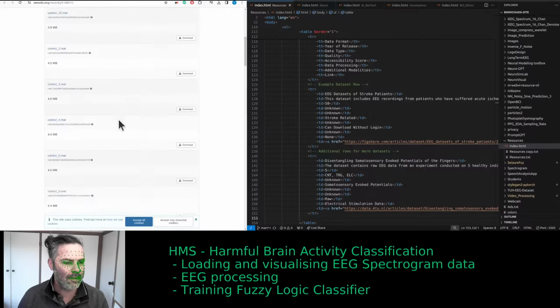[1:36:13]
Who's meant to be telling whom what to do? To manually extract dataset information from the Zenodo link, follow these steps. 1. Open the link, Zenodo dataset zenodo.org/records/4108215. 2. Read through the webpage to find key details about the dataset, such as the title or name of the dataset, a brief description of what the dataset contains or its purpose, the number of subjects or samples included in the dataset, the format of the data files, e.g. CSV, EDF, etc., the year of release or publication of the dataset, the type of data, e.g. EEG recordings, behavioral data, etc. Any additional modalities or relevant information, like whether it includes other types of recordings.
3. Once you have gathered this information, you can fill in the respective fields in your HTML table. Remember, accurate and detailed information about each dataset will be valuable for researchers or anyone interested in using the dataset. Yeah, Creative Commons is nice. But what's your problem? Why can't... above is data from the page? Can you turn it into another entry into our HTML table? Yep.
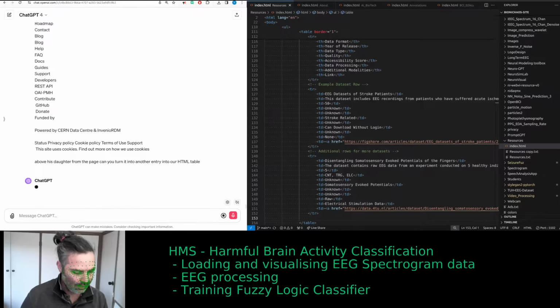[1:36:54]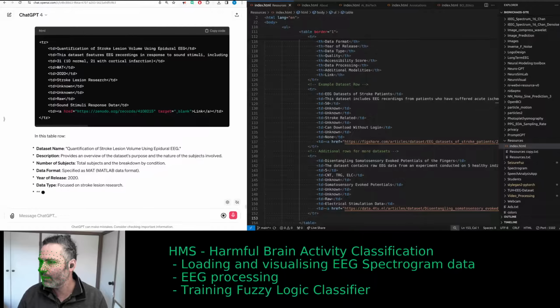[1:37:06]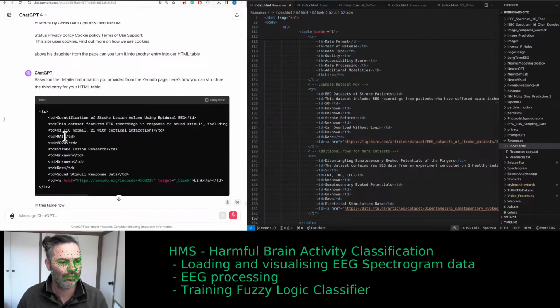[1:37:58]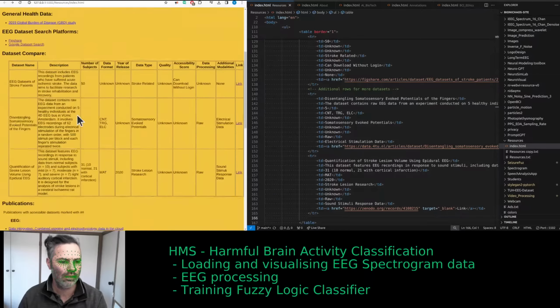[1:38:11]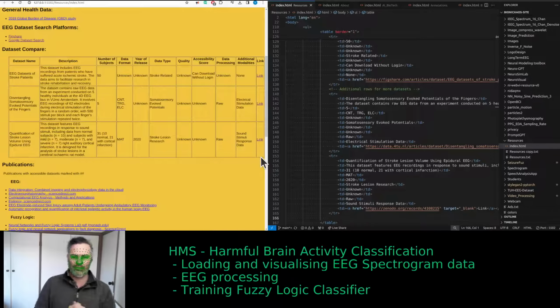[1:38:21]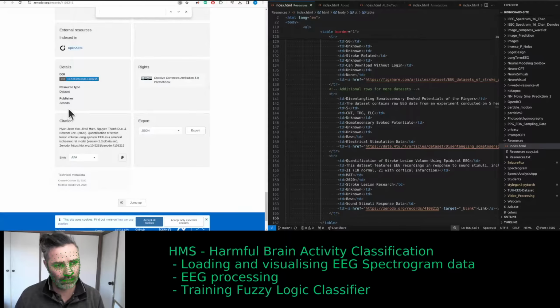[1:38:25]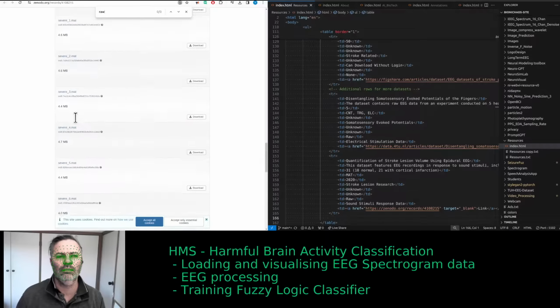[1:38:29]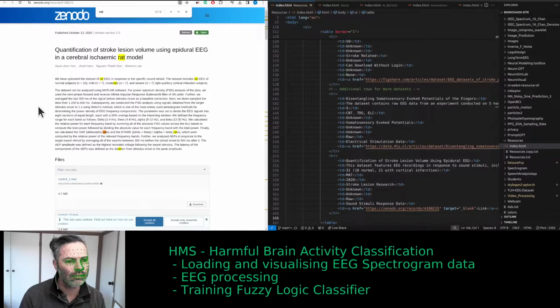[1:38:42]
Based on the detailed information you provided from the Zenodo page, here's how you can structure the third entry for your HTML table. HTML TD, quantification of stroke lesion volume using epidural EEG. This dataset features EEG recordings in response to sound stimuli, including data from normal subjects n equals 10, and subjects with mild n equals 7, moderate n equals 7, and severe n equals 7 right auditory cortical infarction. It is designed for the analysis of stroke lesions in a cerebral ischemic rat model. 31, 10 normal, 21 with cortical infarction. MAT, 2020. Stroke lesion research, unknown, raw, sound stimuli response data,
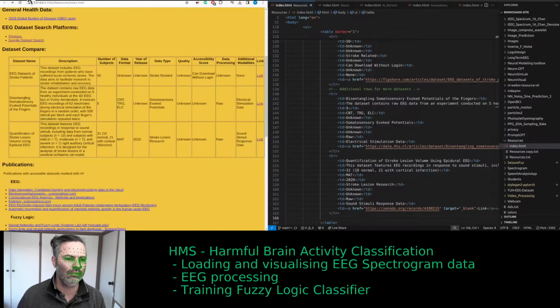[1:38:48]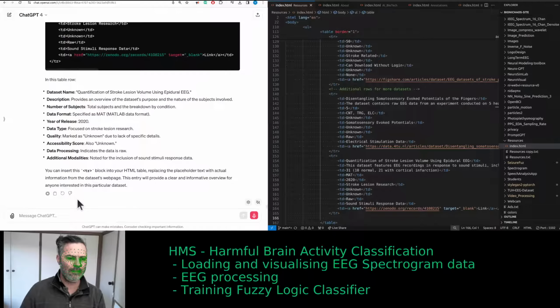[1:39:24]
zenodo.org/records/4108215, link. In this table row, dataset name, quantification of stroke lesion volume using epidural EEG. Description, provides an overview of the dataset's purpose and the nature of the subjects involved. Number of subjects, total subjects, and the breakdown by condition. Data format, specified as MATLAB data format. Year of release, 2020. Data type, focused on stroke lesion research. Quality, marked as unknown due to lack of specific details. Accessibility score, also unknown. Data processing, indicates the data is raw. Additional modalities, noted for the inclusion of sound stimuli response data. You can insert this code block into your HTML table, replacing the placeholder text with actual information from the dataset's webpage. This entry will provide a clear and informative overview for anyone interested in this particular dataset.
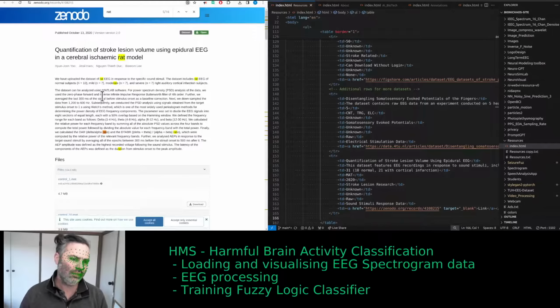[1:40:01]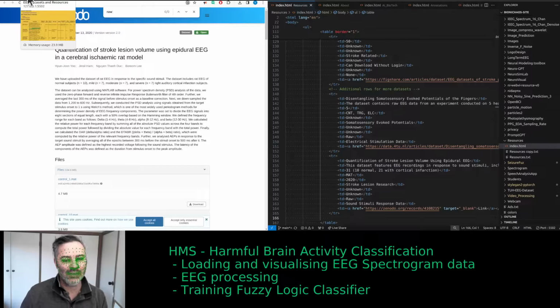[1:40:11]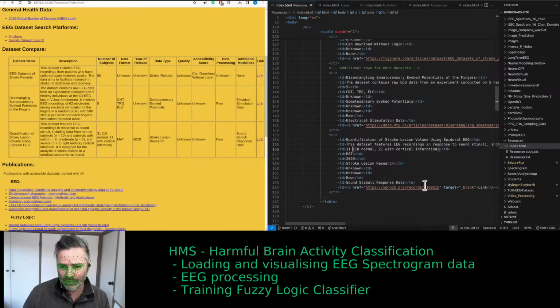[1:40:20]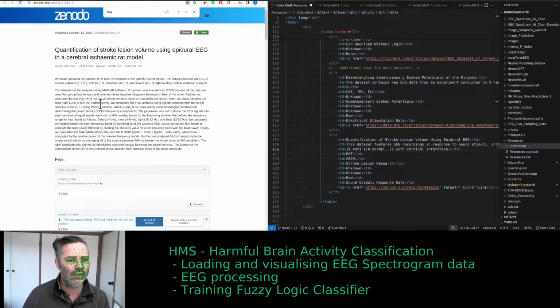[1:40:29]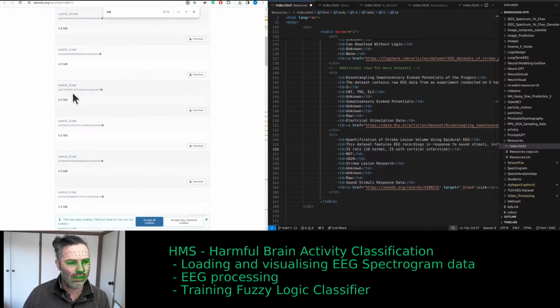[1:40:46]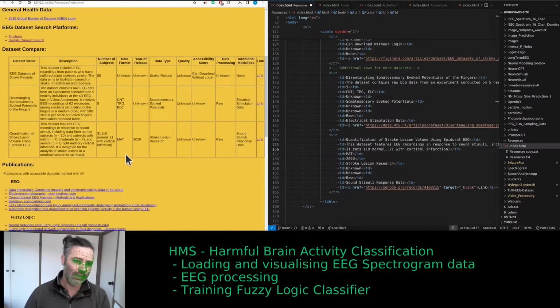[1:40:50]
Yeah, right. I'm not sure where it's getting the raw thing from. The description doesn't actually mention. Now, yes, an important thing we need to mention, who are the subjects? Are they human or not? So assume in this case it's 31 rats. So that does mention it. The files are mat. Yeah, that format mat. That's correct.
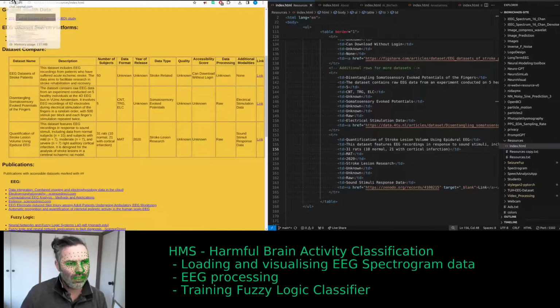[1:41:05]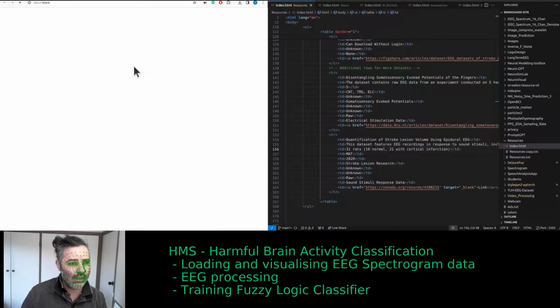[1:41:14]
Now the subject type, species, to mention like in the other sets. What are they? Does this one actually specify human?
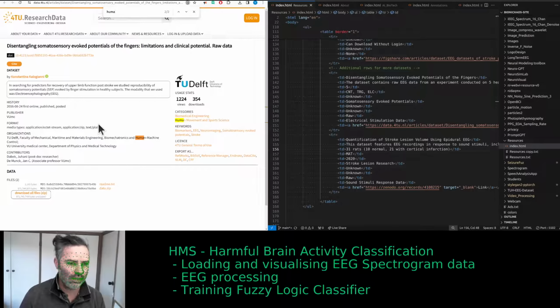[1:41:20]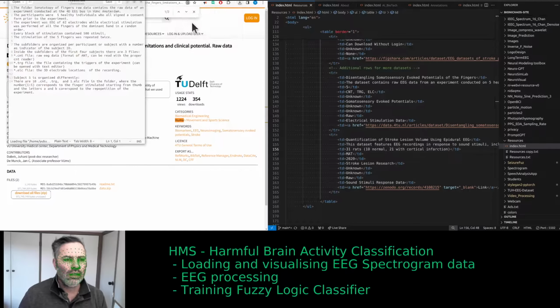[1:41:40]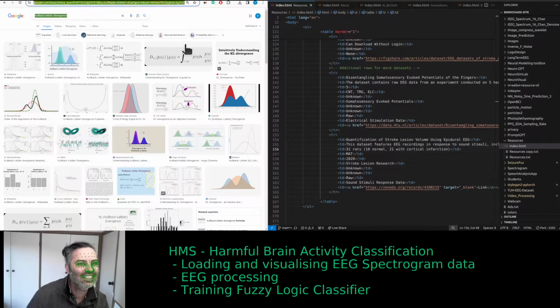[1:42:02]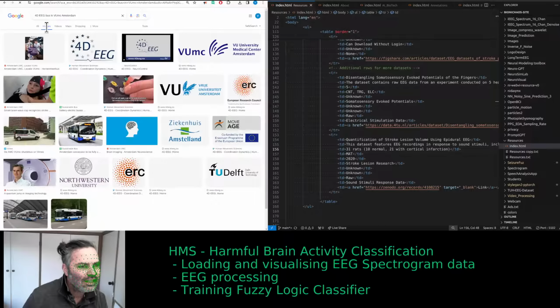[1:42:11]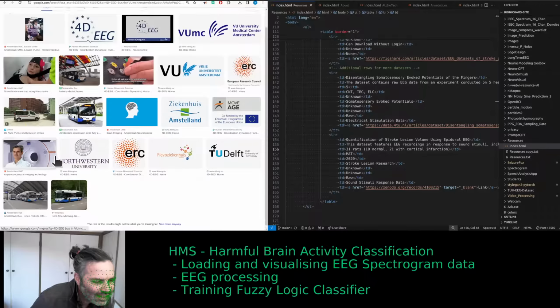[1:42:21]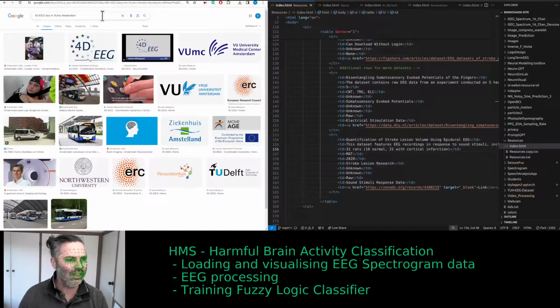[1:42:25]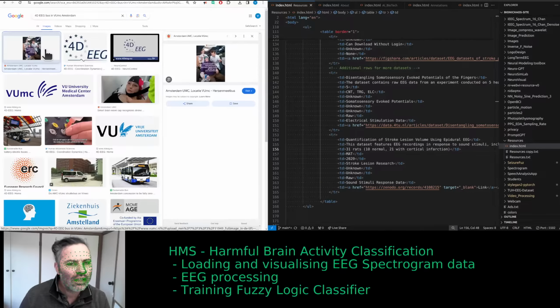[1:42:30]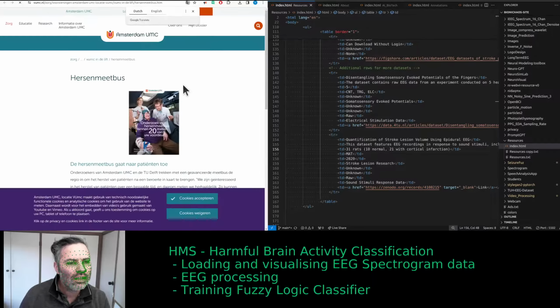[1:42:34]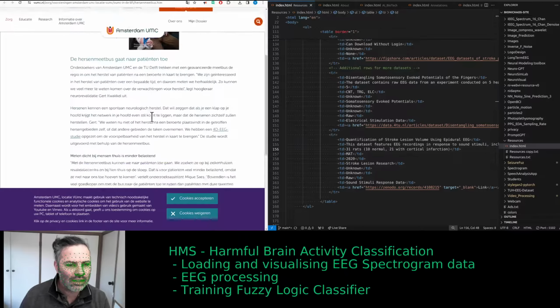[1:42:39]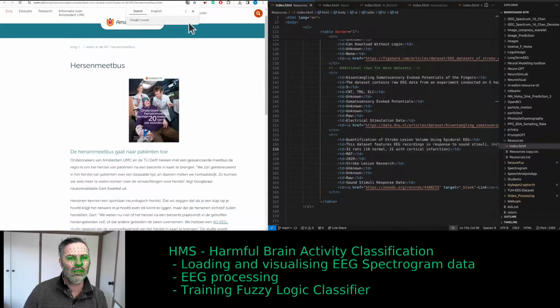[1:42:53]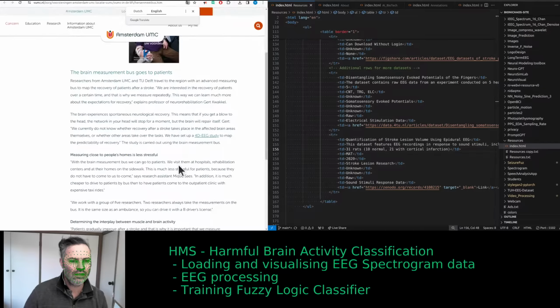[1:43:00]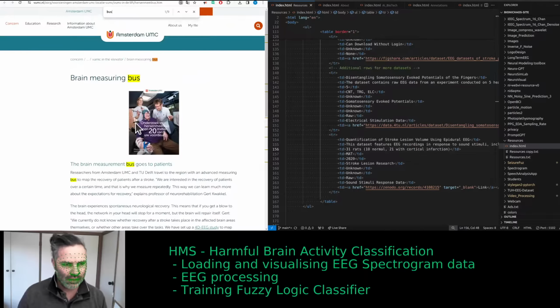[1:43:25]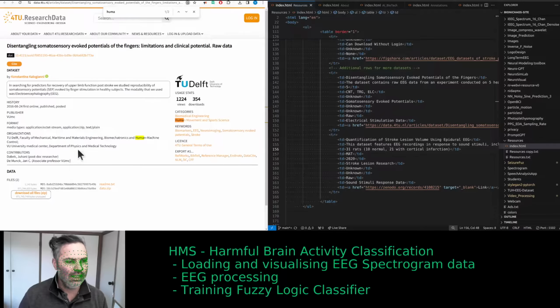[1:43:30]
What would the EEG bus? The EEG bus. An actual bus? Something lost in translation. Or is it? Looks like a bus. It's an actual bus. Right? That's interesting. There's a bus with EEG equipment driving around Europe somewhere, collecting data. And I assume it's human.
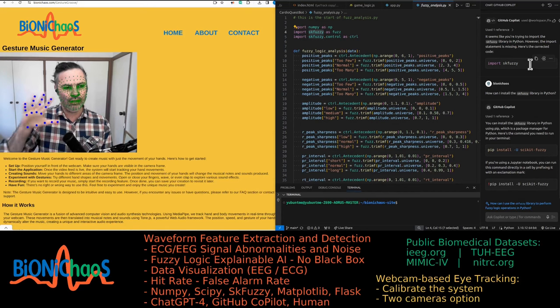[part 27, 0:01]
Yes, this tool is available on the site. You can go check it out. There are videos. The tool is free. You can go generate music. Lots of fun. Make sure you have a GPU. You might need a GPU. So I'm not sure. I did test it on my laptop. It's just slow. It still works, but just much slower. So you can't move too fast on the screen with your hands. So keep that in mind.
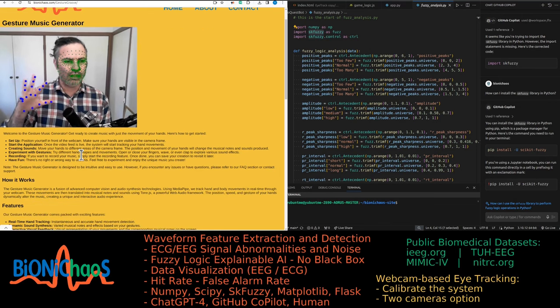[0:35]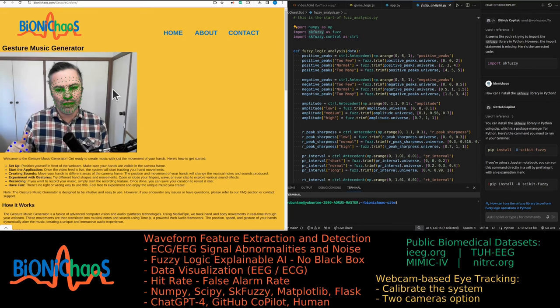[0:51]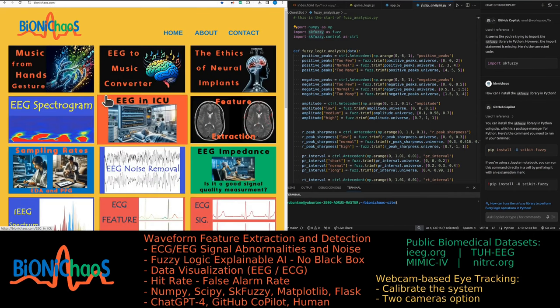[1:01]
It's only JavaScript, only front end, so there's no server in this case. This one should be simple, just load it. It might ask you for camera permission to use, and Bob's your uncle. It's not sending any footage to the cloud. This is front end, just using your local camera, and the footage stays on your own machine. But the quality of how it works will depend on your browser and the computer and the like. And let's jump back to the main site.
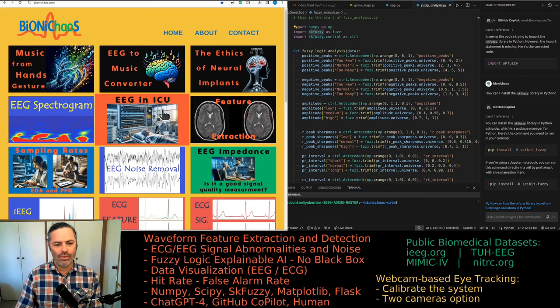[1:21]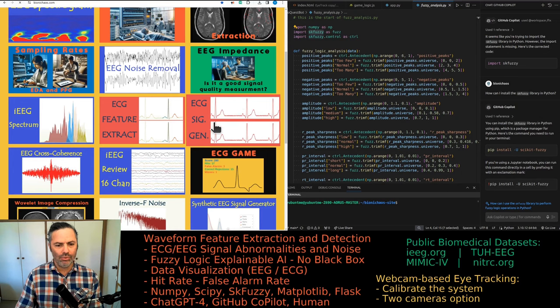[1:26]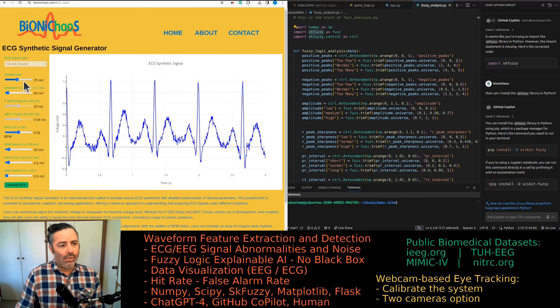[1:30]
We also have this ECG, EEG to music converter. I don't know if you should try and convert ECG into music. It's probably more like a toof toof type of stuff. So yeah, don't expect it to do much. There is an ECG signal generator on the side, one that you can actually change things, the BPM from 40 to 140 if you feel like stressed.
Don't know why the irrelevant ads on my site. Hopefully it will be ideal, it will be someone, you know, a cardiologist advertising their services. Do you need a surgery? So we'll start development in a second.
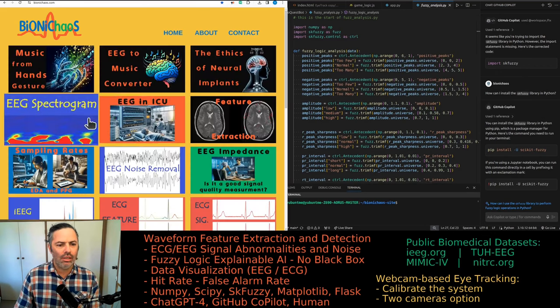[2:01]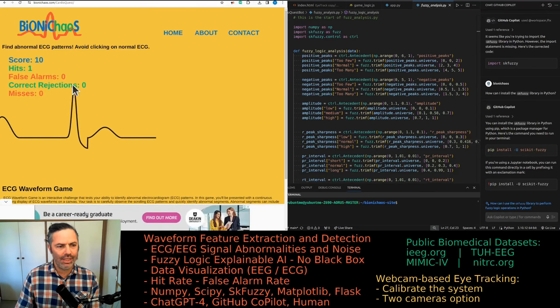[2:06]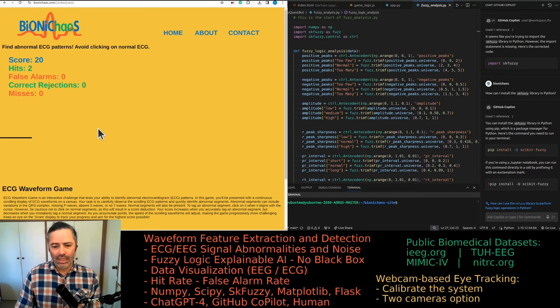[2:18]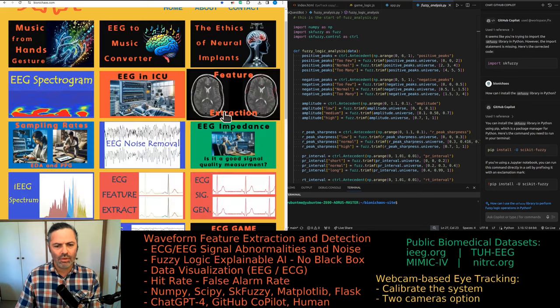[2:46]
We want to release a bunch of new tools on the site for you to play with and watch some ads. Yeah, this one you can already play with yourself, but we'll have another version that we're currently working on where you play against the robot. And yeah, it's a bit like chess. You stand no chance. But we're actually trying to show how it behaves when the noise in the signal is increased. So with increased noise the robot might not be doing so well anymore, but the human still might. Maybe, probably not.
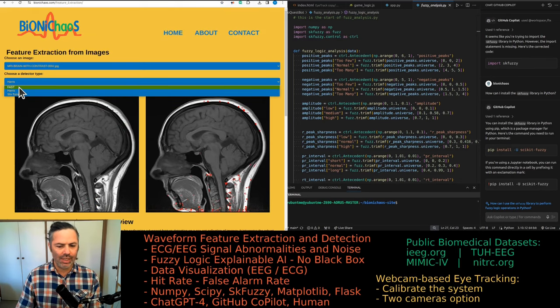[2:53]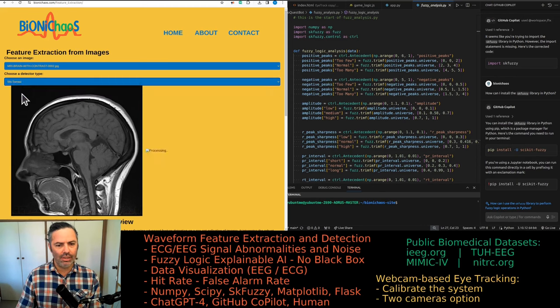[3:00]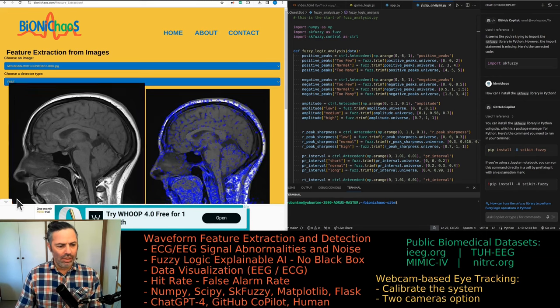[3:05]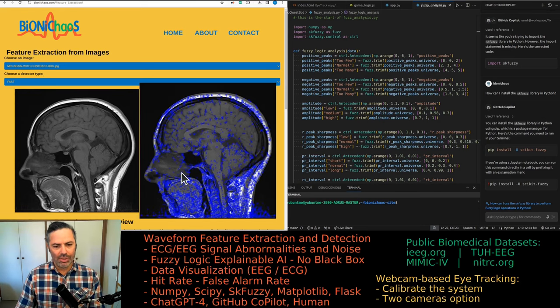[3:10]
What else we got? Some feature extraction, which we'll need more work on. Currently it just shows you a difference between these three commonly used detector types: FAST, Harris, Shi-Tomasi. You can see for this image what it detects. So obviously the FAST is not working very well. It's pretty much detecting anything under the sun. Maybe that's what you want. Harris is pointing out a few regions that it is kind of focusing more on.
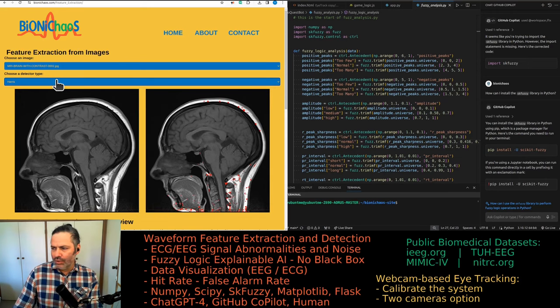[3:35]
Addition to this tool will be an ROI selection, a region of interest selection, where you put a square and it finds you stuff of interest using that algorithm specifically in a certain region. So let me know if interested. We can work on that, or maybe you already done it. Send me the link. And Shi-Tomasi is kind of similar to Harris. It's not much difference. The labels are smaller, so it just looks different, but it might be doing the same. I know it's missing that point there. I don't know if it's important or not, probably not.
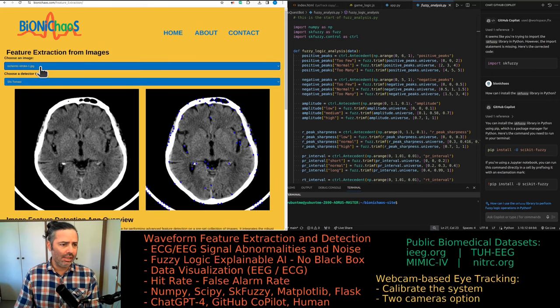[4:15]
And yeah, you can select a different image. What's it, the ischemic stroke? I don't know what the stroke is, but ideally you'll have to help it, because in this case you have a lot of the bone in the image, so it will obviously get confused. Yeah, the Harris is just focusing on that bit there. You will actually have to indicate a smaller region of interest, like here or there, or compare the two or something, and it will focus on those.
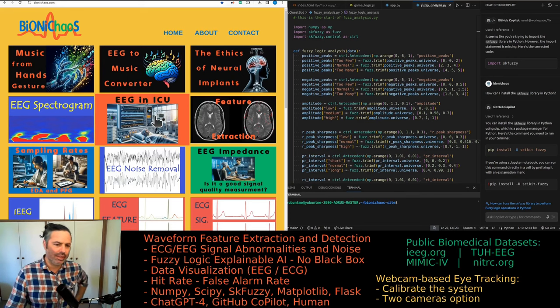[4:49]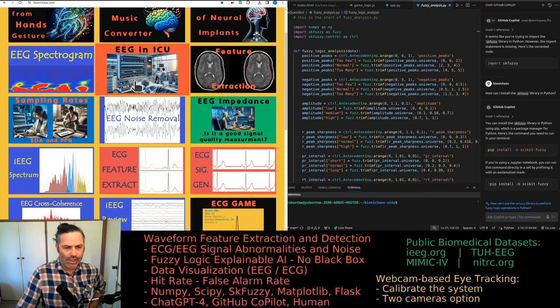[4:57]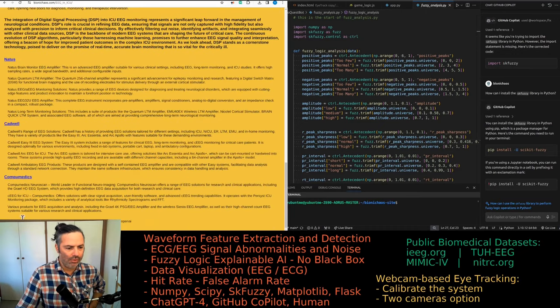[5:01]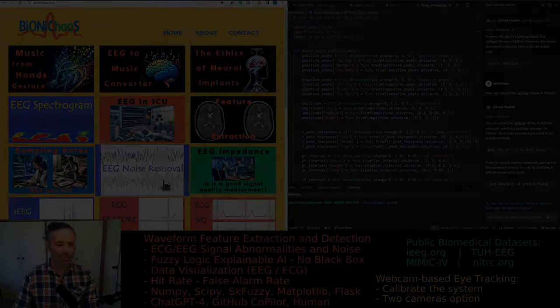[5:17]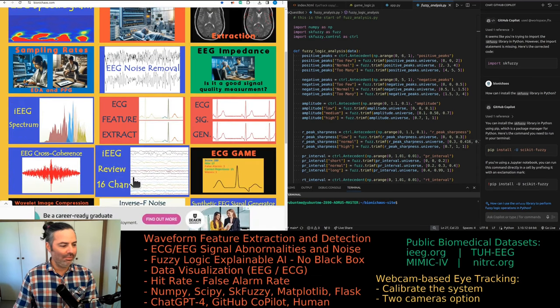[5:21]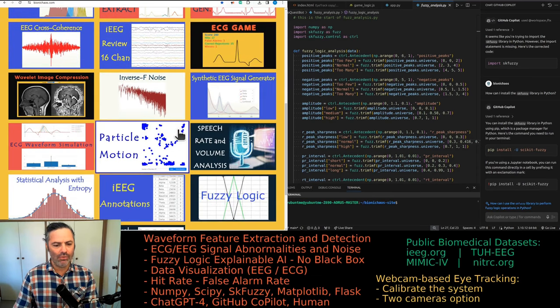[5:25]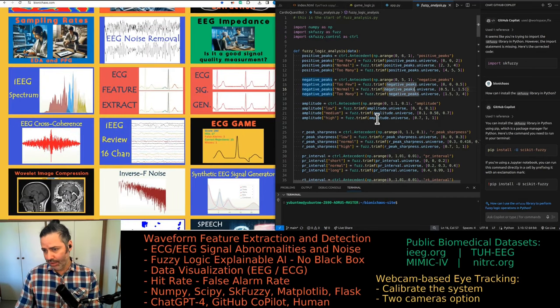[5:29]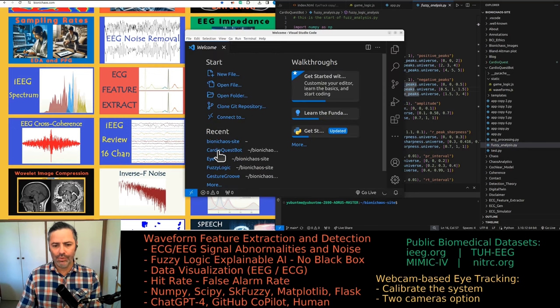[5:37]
What else we've got? We got a bunch of blogs that were written by GPT-4, so beware bot alert. It actually says so at the bottom of each blog that the images and text were generated using DALL-E 3, a beta version at the time. I don't know if there is a better one now. And GPT-4 via the chat OpenAI. Check them out. If you have any thoughts let me know which tool you have used, how I can improve it. We are combining fuzzy logic with the ECG game. Let's just open another Visual Studio Code. Yeah, I'm doing the CardioQuestBot.
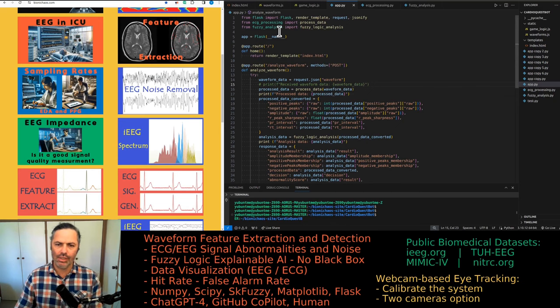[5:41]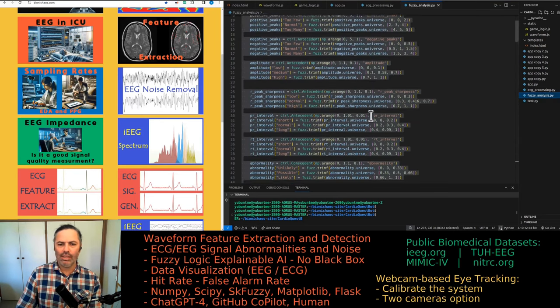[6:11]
The Flask compilation is essentially just Flask, and then it's importing functions from another two Python files, one called ECG processing and the other one is called fuzzy analysis. So you can guess what they are doing. The ECG processing has a process data function, calculate R peak sharpness, and that makes sense, detecting peaks, calculating intervals. And fuzzy analysis has this very long fuzzy logic analysis function that has all the membership functions in it.
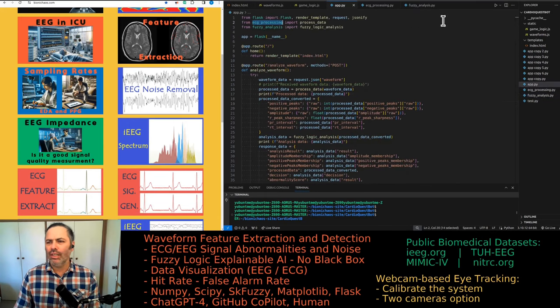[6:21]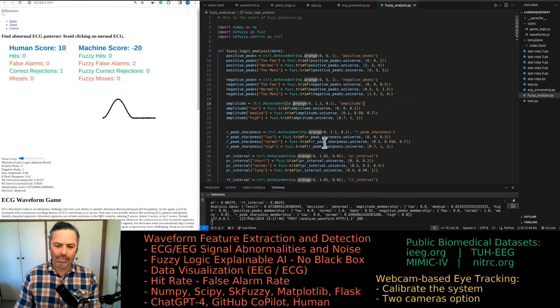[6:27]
So we're currently looking at this. I'll run the thing so you can actually see what I'm talking about. Yeah, so this is the main function that plays the game. It's currently not doing so well. Even with minimal noise, it's labeling everything as an abnormal ECG waveform, which is not great. We can still play the game ourselves, assuming you are human. I don't know, let me know if you are. And then the machine using fuzzy logic, which currently works really well.
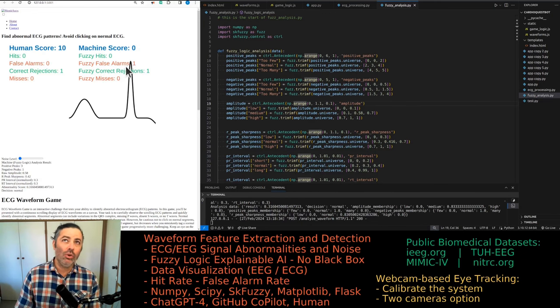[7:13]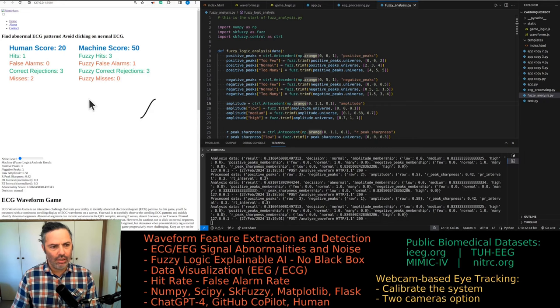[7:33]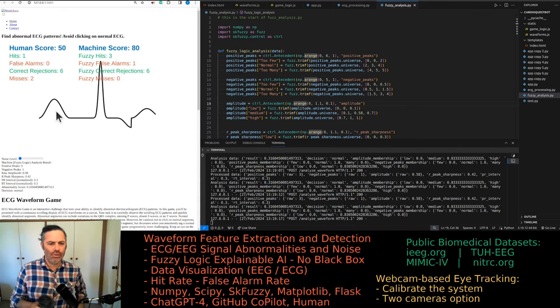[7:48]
So if I restart the page and reduce the noise, yeah, it got one false alarm because it was a normal waveform and it labeled it as abnormal, therefore the one false alarm. The human is not paying attention as per usual, so not doing great, so I'm already lagging behind. This one is a normal ECG waveform, so I did not click on it, same again, and I get extra 10 points. That's three normals in a row, which is a bit unusual. Four normals in a row. It's highly unusual. Yeah, that's an abnormal. And the bot with no noise is just doing absolutely awesome, as in not making any mistakes.
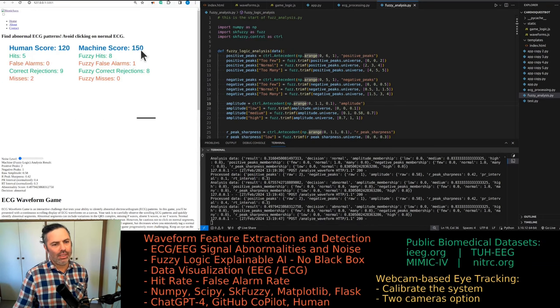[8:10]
So unless we add some noise to the mix, the bot will be winning by miles, because the game also becomes faster. Every 50 points, the speed of the scroll window increases slightly. So once we get to about 1,000 points or so, it becomes super fast and the human is out the door. Can be resting, just watching the robot doing their job. But so far, I'm still keeping up, kind of.
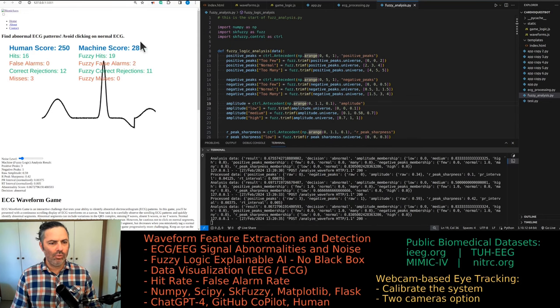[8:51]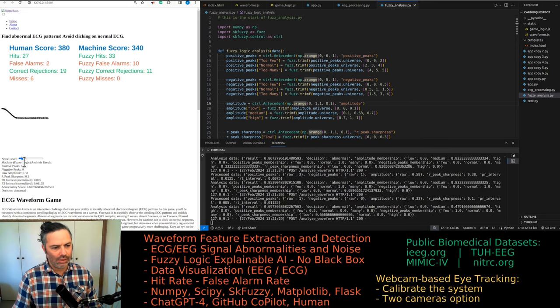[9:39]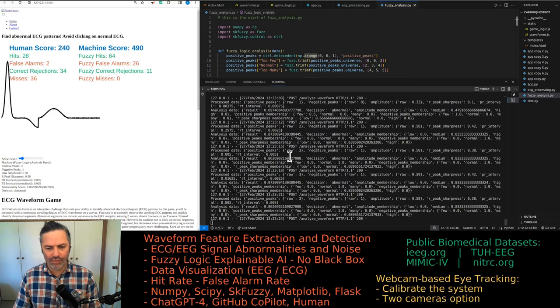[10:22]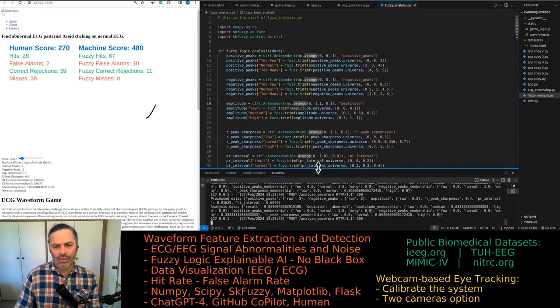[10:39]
Yesterday we were getting this error that for one of the waveforms, we had no fuzzy rule being met, and it throws out this, well, it's really a warning, but yeah, it's called an error. But we don't see that anymore, because we actually got GPT-4 to adjust the membership functions for us just slightly, so it doesn't happen. It didn't really know the specifics of what needs to be done. Essentially, we had to go over these membership functions and rules multiple times.
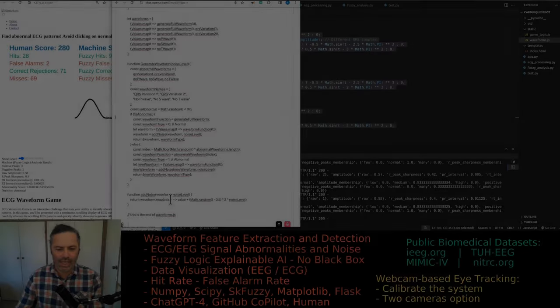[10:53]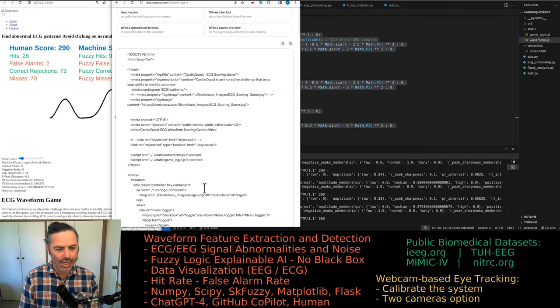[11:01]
I can go over it quickly again, or just get the robot to do it maybe. With the waveform generation JavaScript code, we eventually, not right now, would like to add more types of different waveforms with different abnormality levels. If you have any suggestions as to which ones I should include, do let me know. Okay, this is the game logic itself. You can explain what it does. But generally it does all the calculation of scores and displaying stuff on the screen.
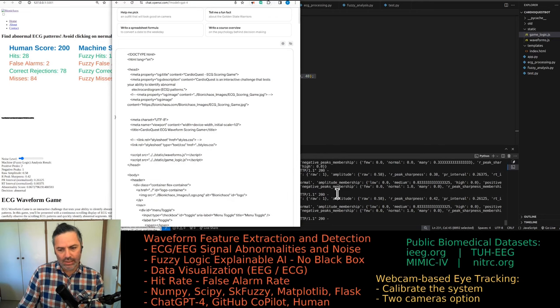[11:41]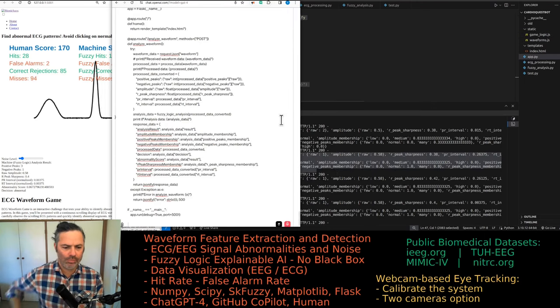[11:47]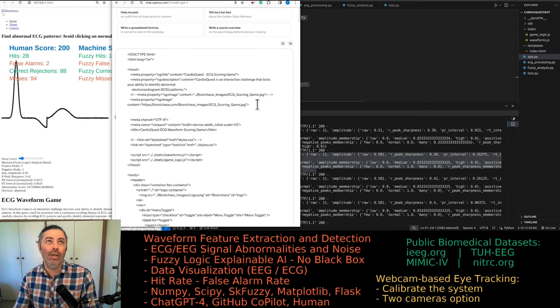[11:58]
Now, we would like to display everything the fuzzy logic algorithm does. So essentially, on the front page, we would like to show all of this. Now, this is the Flask application code, a Python script. We already have about 10 or so Flask applications published on our website and server. We would like to add this one as well. Should have some instructions written somewhere as to how to do it quick and easy. Now, this is the ECG processing, essentially pre-processing of the data before the fuzzy logic analysis.
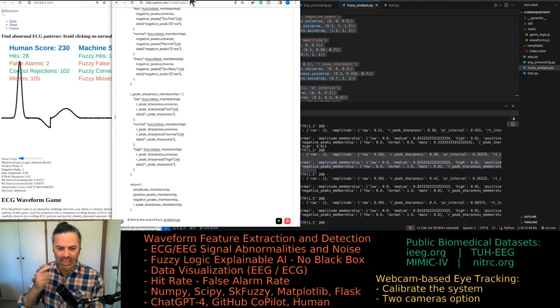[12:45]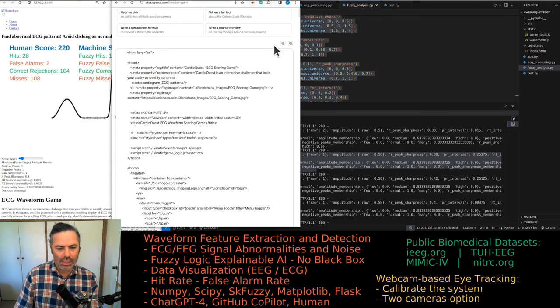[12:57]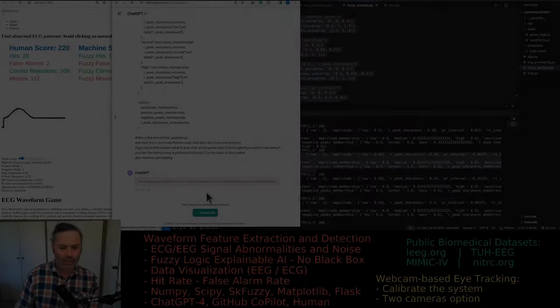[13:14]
Just keep in mind, we don't want to do any filtering. So no filtering. We would like the fuzzy logic algorithm to see exactly what the human player sees on the screen. And this is the main Python code that does the fuzzy analysis. If you can briefly explain what it does, that will be great. Keep it short, light. If you feel like being funny, go for it. But keep it on the topic of discussion. Also mention unit testing.
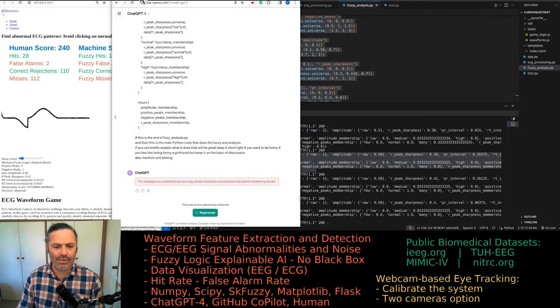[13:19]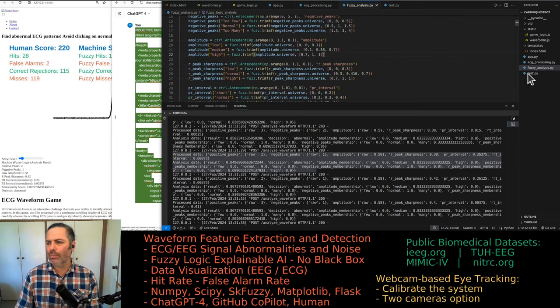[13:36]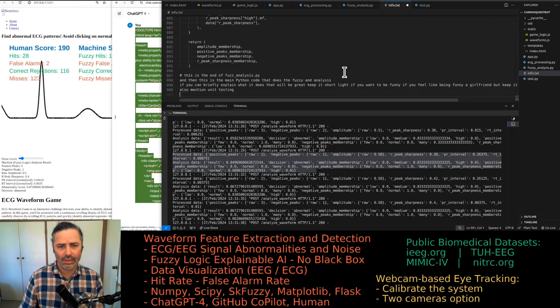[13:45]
Yeah, of course it was. Yeah, so I don't know what happened. It just happened recently, just today. Essentially it kept saying the message you submitted is too long, please reload the conversation and submit something shorter. So it's quite unusual. Let's pop it into info, because we don't currently have one. Also need requirements in the requirement file as well.
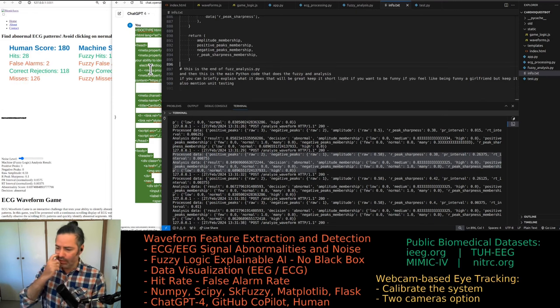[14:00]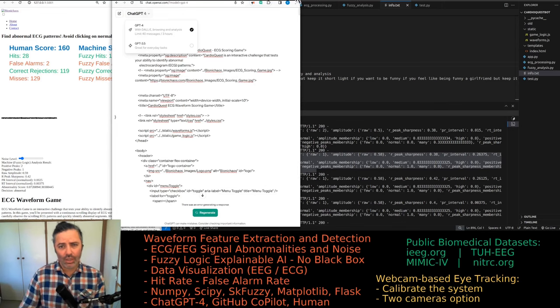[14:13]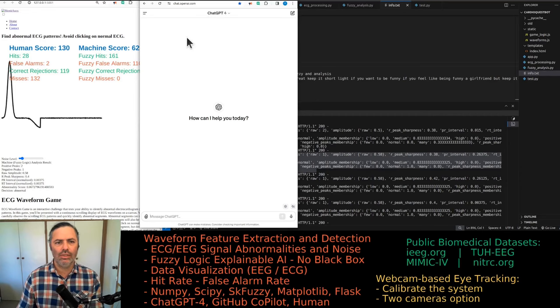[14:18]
So yeah, it's 900 lines of prompt. I thought it can handle it. I'm pretty sure it was able to handle it. I'm not just saying, because originally what was happening is that we were hitting the 40 messages per 3 hour limit all the time. And yes, there was a suggestion somewhere that we should just do longer prompts. Let's Control F5 this. Try it again. I'm pretty sure something has changed in the model.
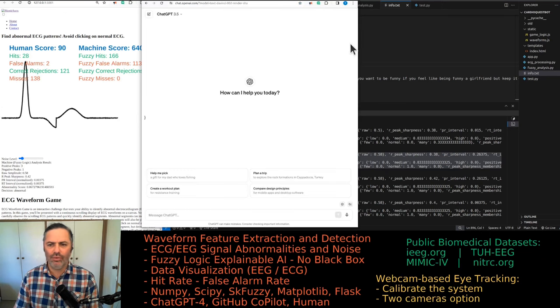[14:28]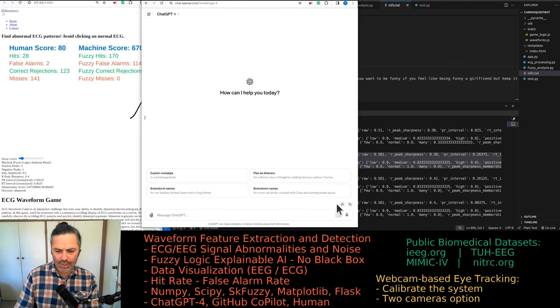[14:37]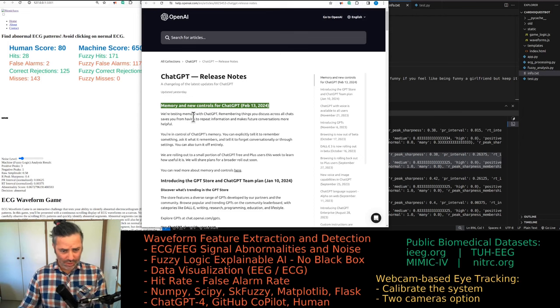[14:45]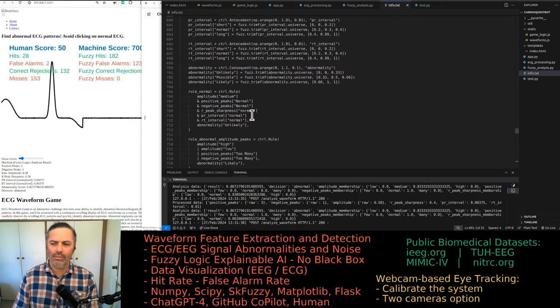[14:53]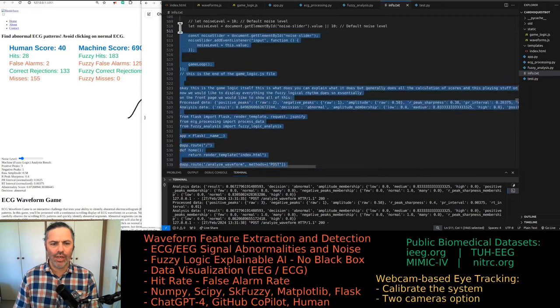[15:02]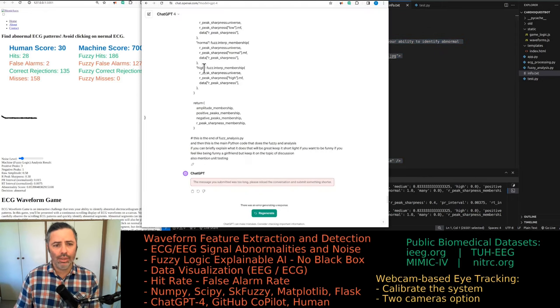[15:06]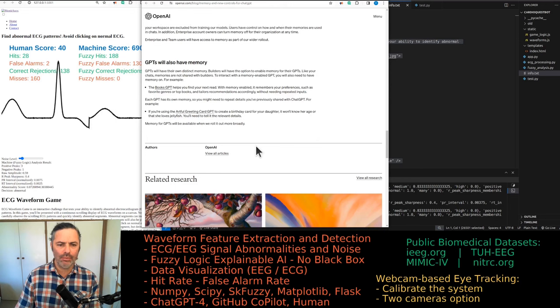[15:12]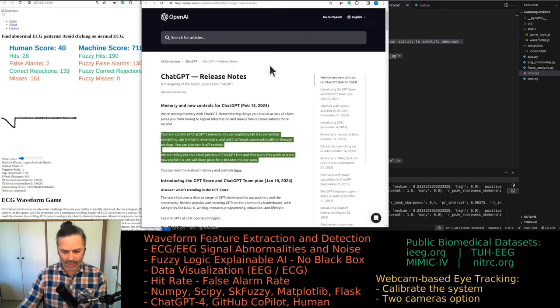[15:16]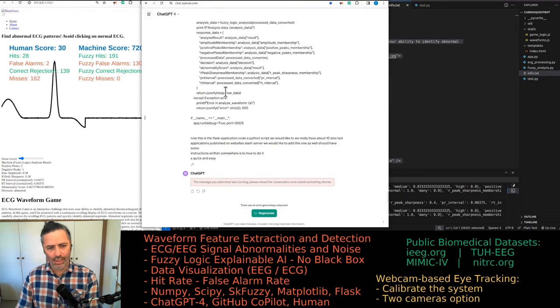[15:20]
Let's try 3.5. Where's the information bit? So they added that memory component. That's different. That's an overlay. Ah, there it is. Yeah, they had that most recent change. Sorry for that. Yeah, might have to restart the browser or something. Anyway, not just saying, I'm pretty sure it was working before. Let's try like 500 lines. We'll try this and then do one file at a time. Nope. Okay. Yeah, memory, blah, blah, blah. Don't really understand the point of having those GPTs. They're essentially doing the same stuff as GPT-4 itself can. So what's the point?
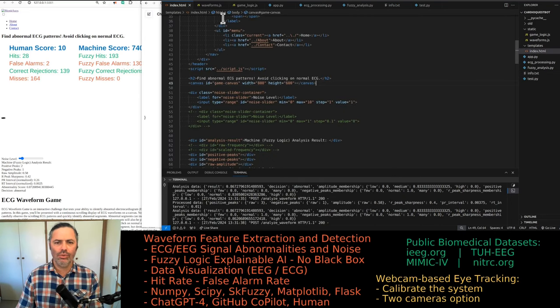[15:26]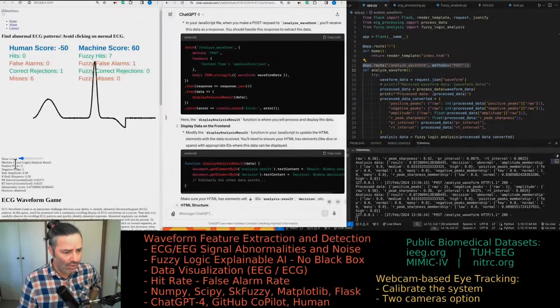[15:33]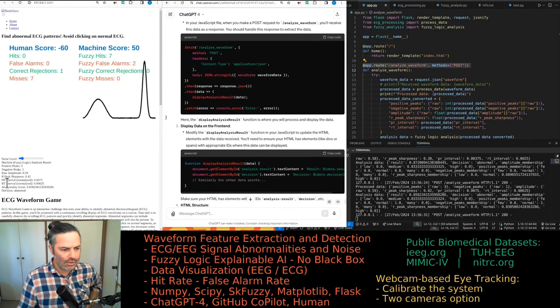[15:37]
Okay, let's do them in a different order. So obviously the order will matter. So essentially on the front panel, you have your analysis result, the number of positive and negative peaks, raw amplitude, peak sharpness, R peak sharpness. Well, the R peak is actually assuming the tallest peak in the current waveform. One of the problems with this type of analysis is that we don't have continuous ECG scrolling. We have one PQRST wave coming at a time. So we don't have, for example, the distance between R peaks. We only have a PR interval, which is really messy.
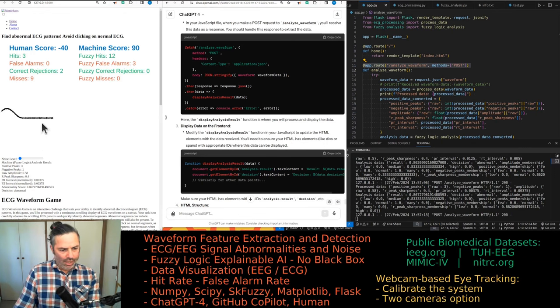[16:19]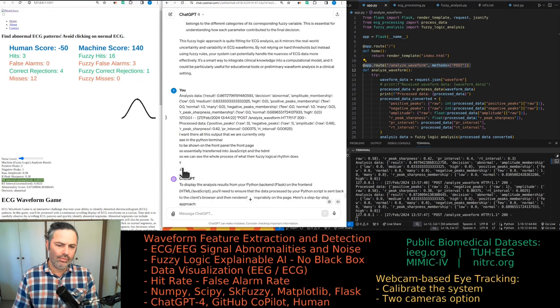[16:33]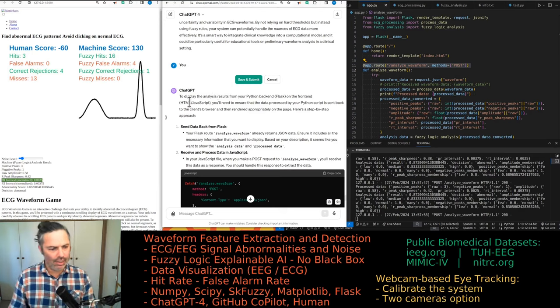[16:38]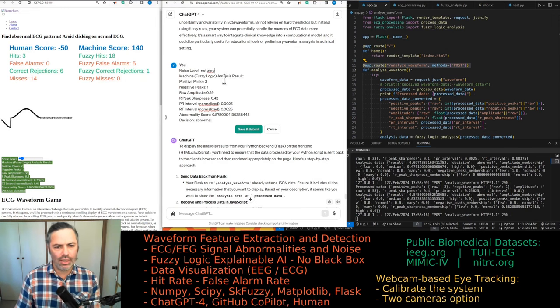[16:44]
Those values are incorrect when there is noise in the signal. It's essentially finding way too many peaks. That's also why the detection isn't working. Yeah, that's something we have more of an interest in fixing. No, so instead of that, don't worry about that. It's not what that number is, it doesn't really matter. It's just not zero. So when the noise level is not zero, these two, positive and negative peaks, are correct. However, this is wrong.
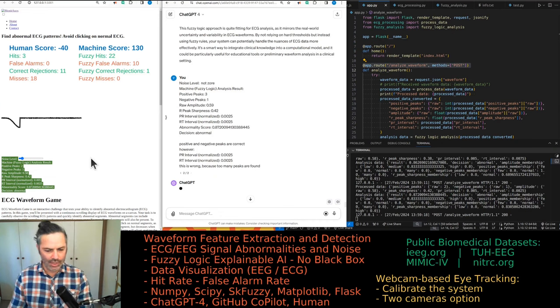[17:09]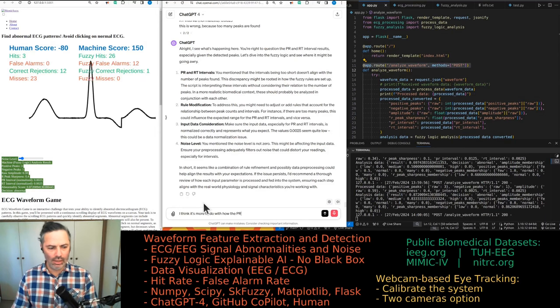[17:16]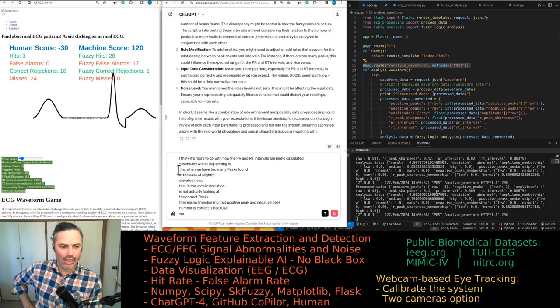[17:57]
I think because it's finding too many peaks. Yeah, I want to go over this. That's the one we want to improve. I think it's more to do with how the PR and RT intervals are being calculated. Essentially, when we have too many peaks found, in the case of slightly elevated noise, that interval calculation is not actually looking at the correct peaks. The reason I'm mentioning that the positive and negative peak numbers are correct is because we are applying some sort of thresholding that doesn't allow for too many negative and positive peaks being detected.
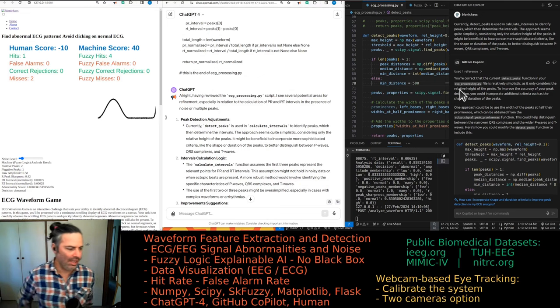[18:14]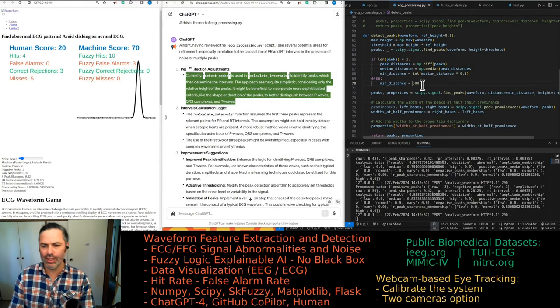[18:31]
Can you have a look at the code? So we changed, when we say we, it's kind of me, just a bit, but mainly GPT-4 and GitHub Copilot. We need to see a correct rejection. Now, those numbers still seem to be too low. Go over this stuff one by one. Trying in a noise condition, those PR intervals are way too low. We'll keep it at 100. That number should just make sense.
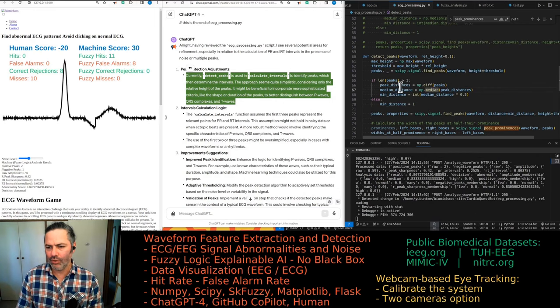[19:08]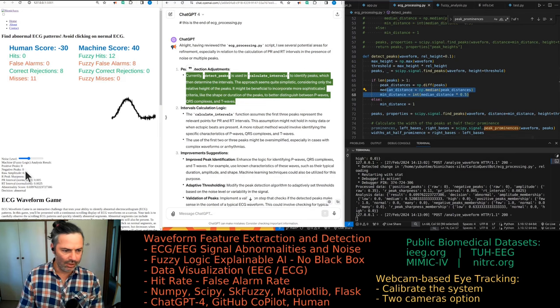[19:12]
So it essentially means that if the noise caused too many peaks to be detected in a short succession, they will not be taken into account. Yeah, this code essentially says if there's more than one peak, that code is actually not correct. And I was modifying the wrong bit. It's actually this bit here. So if the number of peaks is more than one, which in this case, the current problem that we're trying to solve is that these numbers are too low.
What these numbers should be is, if we remove the noise, yeah, those numbers make sense. So 0.4 and 0.3, it's the distance before and after the R peak to the next peak, or if there was no peak, to the beginning of the waveform. So those numbers are correct. Problem is, when we have noise introduced, those intervals are not being calculated correctly.
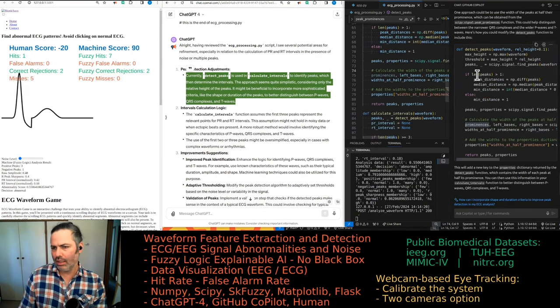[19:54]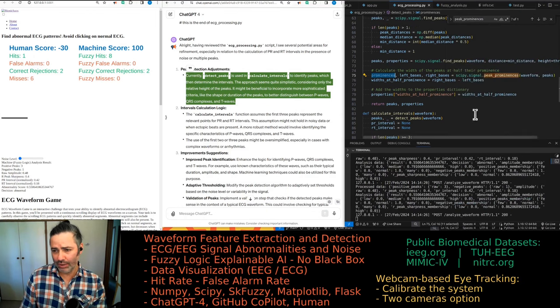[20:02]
Yeah, I don't know where GitHub Copilot again made a suggestion, but not sure what it actually did. It introduces prominences, but then it's not actually using it. So we might revert back to the previous code. Well, considering what it suggested, it didn't make much difference at all.
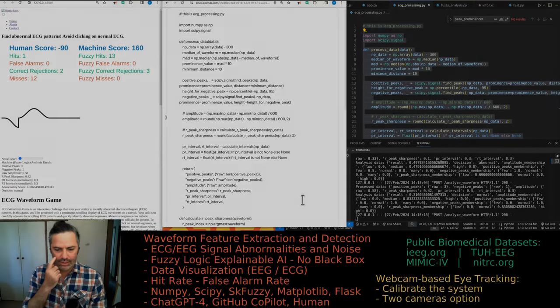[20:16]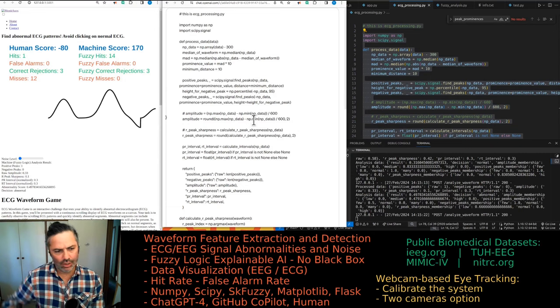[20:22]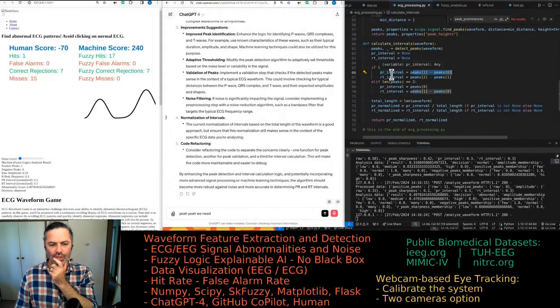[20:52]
Can we go over this code, essentially line by line, and make suggestions as to how to change it so that when there is a little bit of noise introduced, the PR and RT intervals are still calculated correctly? Currently, the numbers are way too small because it's essentially looking at peaks that are too close that were labeled when there is noise in the waveform. Yeah, we need to change the calculate intervals function.
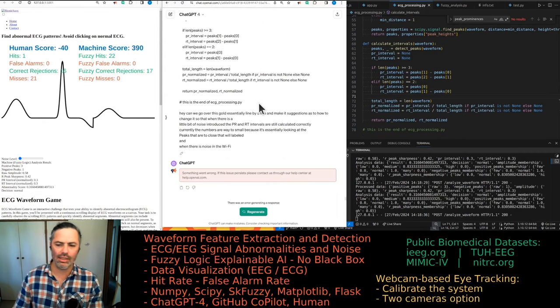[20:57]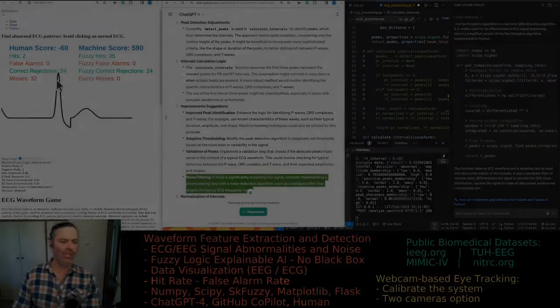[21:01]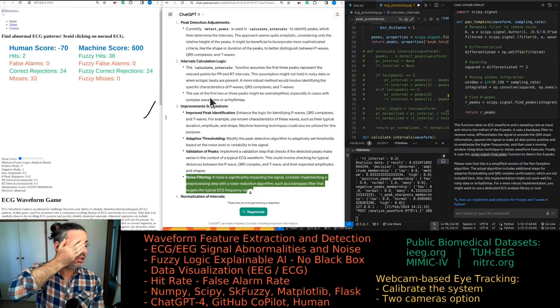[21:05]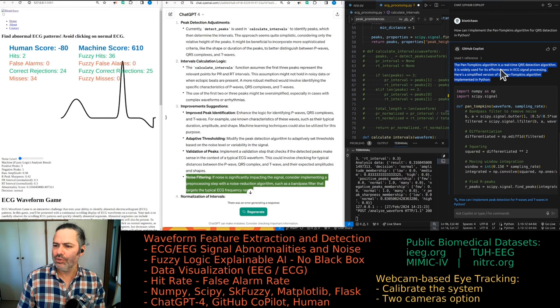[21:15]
Yeah, there are definitely some issues with this. Yeah, that's just how little I know about ECG. I was working with EEG before. But is it just pulling my leg, or is there this Pan-Tompkins algorithm for QRS detection? It's a real-time QRS detection algorithm, widely used for its effectiveness in ECG signal processing. Here's a simplified version.
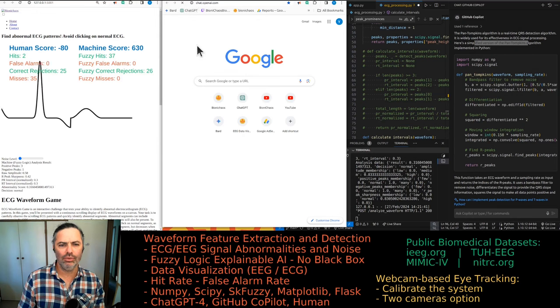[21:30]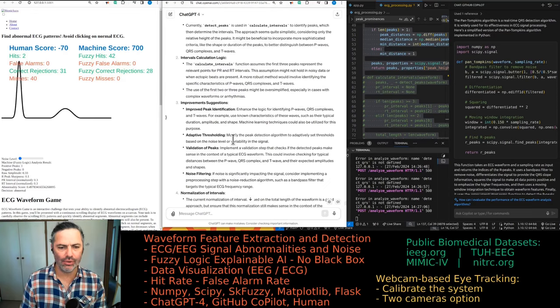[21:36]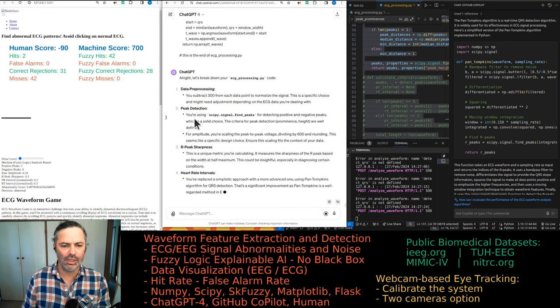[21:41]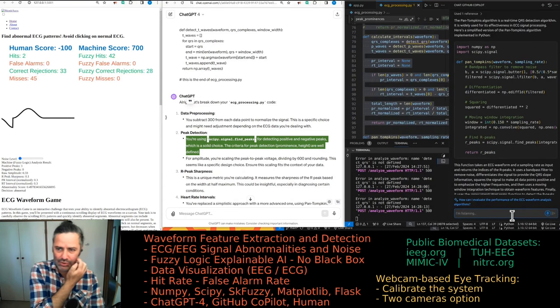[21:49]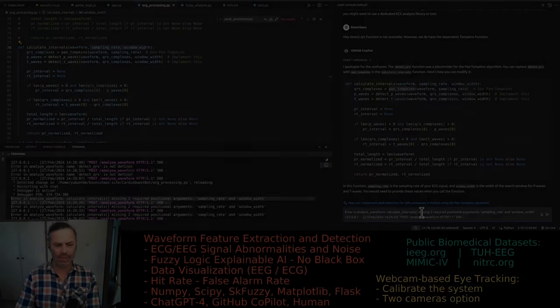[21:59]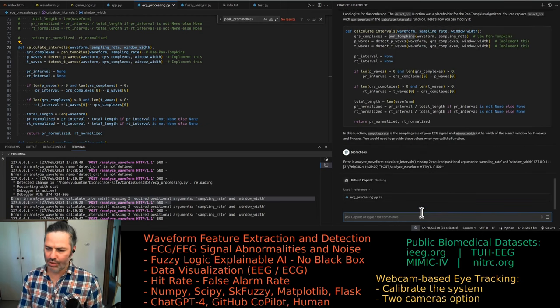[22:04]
Okay, pop it into GPT quickly. There's a problem with that code though. Need it in the context of the whole code. Yeah, don't worry about it. Yeah, we now have detect QRS, which in theory, a detect QRS function is not available. However, we do have the Pan-Tompkins function. Any suggestions to actually check if that Pan-Tompkins thing is legit or not?
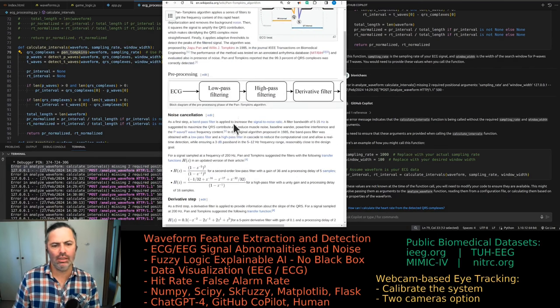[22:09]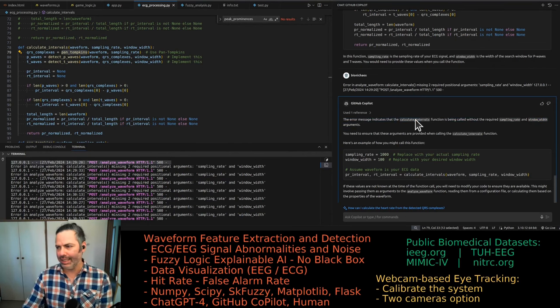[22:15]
So let's have all these magic numbers. Well, at least we know it exists. Why are those not clickable links? Because sometimes they are. Once you've seen it, you can't unsee it, can you? Now you expect them to be links, but they are not. I wonder if it's just not working properly on Linux.
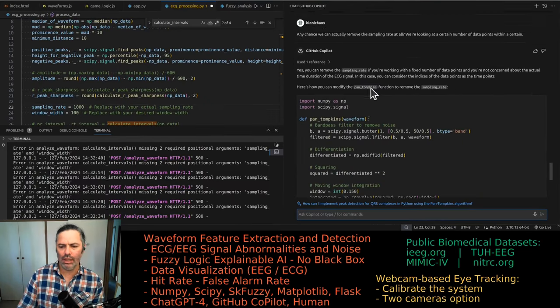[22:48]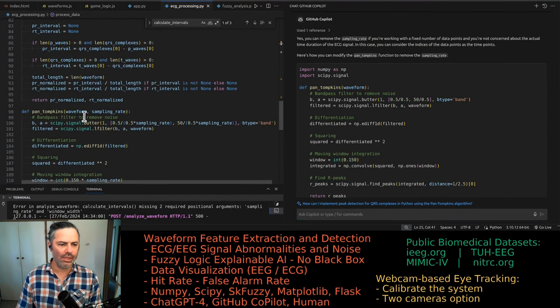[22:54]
Any chance we can actually remove the sampling rate at all? We're looking at a certain number of data points within a certain waveform. Let's see if it understands. No, we're not concerned with the actual sampling rate. Yeah, we'll get rid of it. And in the Pan-Tompkins, yeah, we don't worry about the sampling rate at the moment.
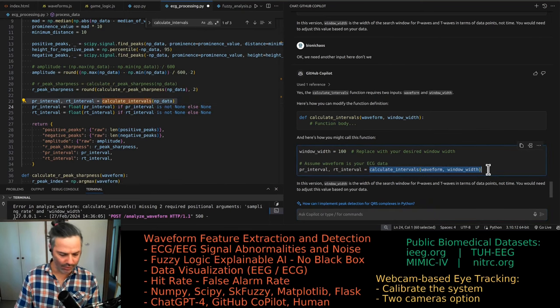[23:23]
Well, just take my word for it. Trust me, I'm an engineer. What is it they say? Yeah, we still need the window width, but we're getting rid of the sampling rate. Okay, we need another input here, don't we? Yeah, 100 sounds fine. Okay, it's not actually called waveform, it's called the NP data.
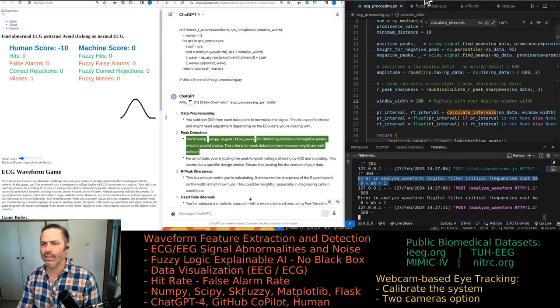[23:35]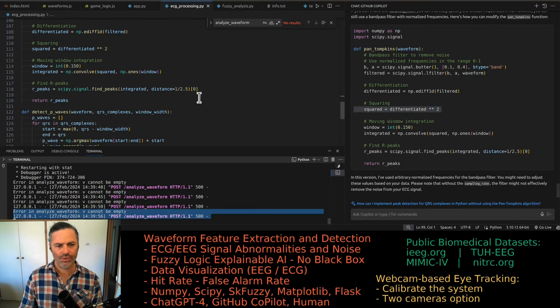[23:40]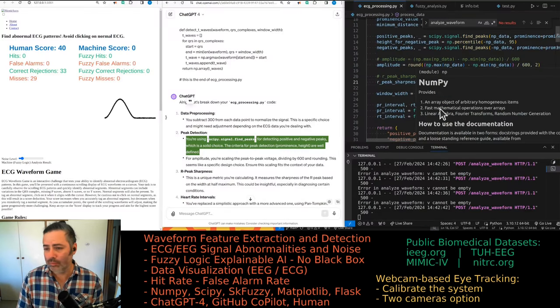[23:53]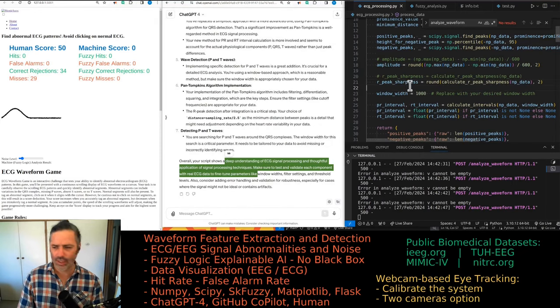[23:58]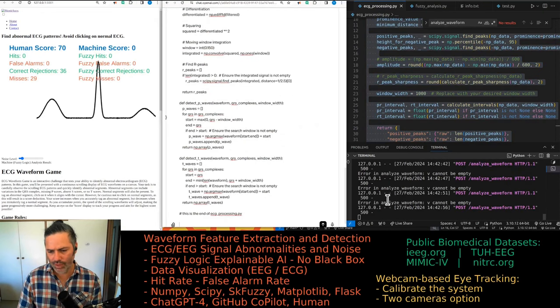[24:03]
Just adding window width there. And the actual normalized frequencies, the difference between those two, I don't know. So is this still around this code? Maybe the window width should be larger. Yeah, Copilot is mostly messing up my stuff. And there is currently something wrong with GPT-4 on the website.
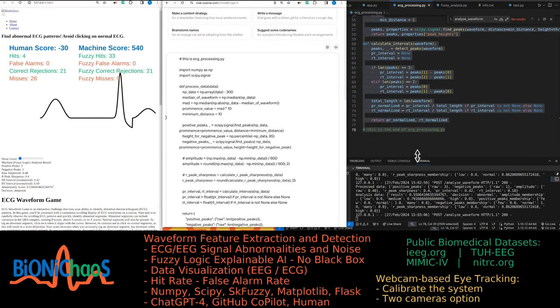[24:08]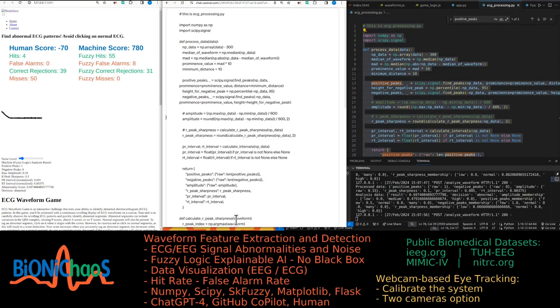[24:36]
Okay, we want to leave all the code the same and only change the calculate intervals function. So currently, when there is some noise in the signal, the PR and RT intervals are way too small because there are too many peaks being detected. Can you look at the code again?
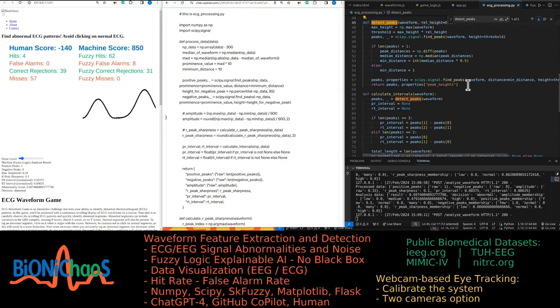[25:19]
So in the process data function, we do have a median calculation and a prominence value. Are we using it when calculating intervals? Any chance we can move the prominence and median calculation bit of the code, and the minimum distance as well, into the detect peaks function so that when we are calculating intervals, it is being taken into account, so we are not looking at too many peaks in the presence of noise?
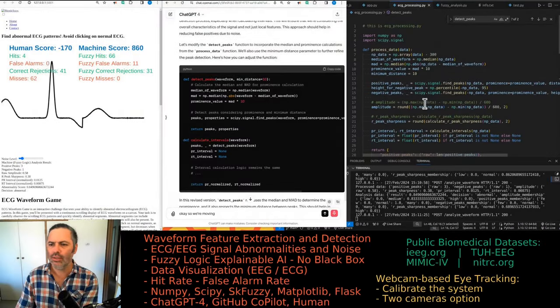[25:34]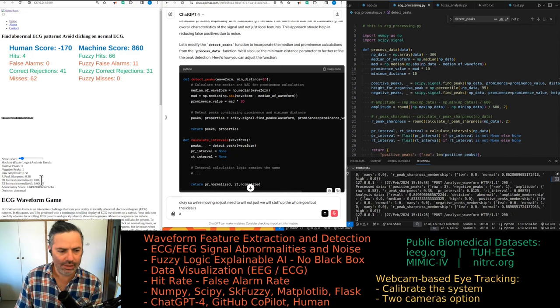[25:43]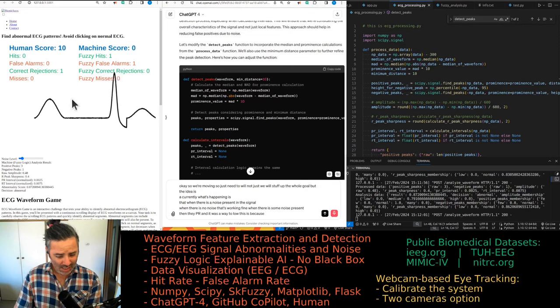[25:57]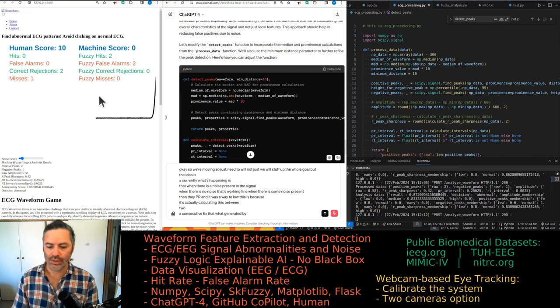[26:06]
Okay, so we're moving, so you just need to, well, not just, we will stuff up the whole code, but the idea is, currently what's happening is that when there is no noise, it's working fine. When there is some noise present, then the PR and RT intervals are way too low. And this is because it's actually calculating distance between two consecutive peaks that were generated by the noise, and we do not want that. The peak detection here, the number of peaks, is still working fine, even if you do have noise.
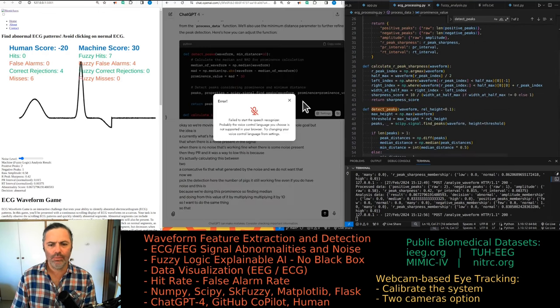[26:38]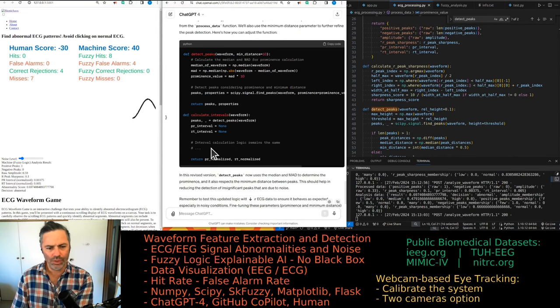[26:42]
This is because we're doing this prominence, so we're finding the median and calculating a prominence value by multiplying it by 10. So we want to do the same thing so that the detect peaks function is using it. It's not the whole function, is it? It's returning peaks and properties. That should be fine.
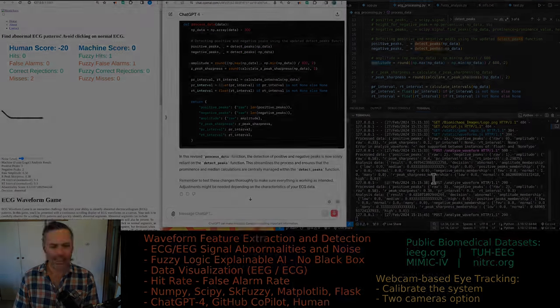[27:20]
Then in detect peaks, it essentially remains the same, so I'm not sure why it even changed it. Do we need to change the process data function? Remove the median, med, and prominence value parts of the code. In this case, it wasn't actually used before. Everything else, I suspect, remains the same. Hitting errors only some of the time.
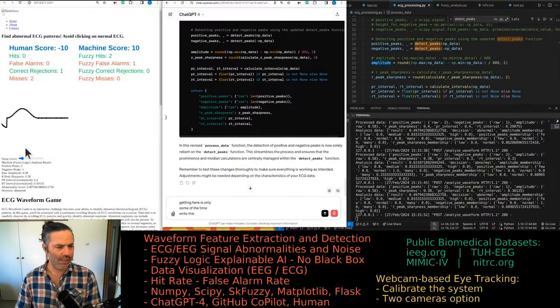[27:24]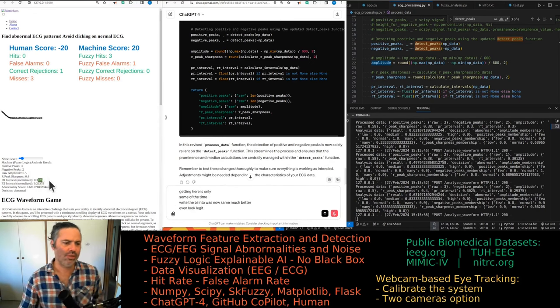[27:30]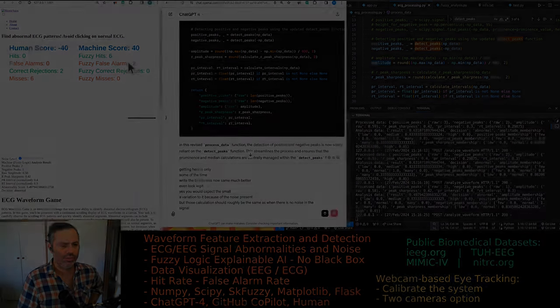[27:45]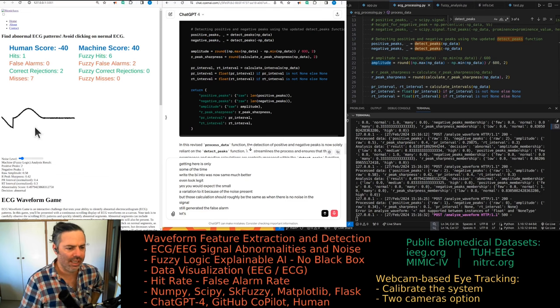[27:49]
Right, the PR intervals now seem much better. They even look legit. Yes, you would expect a small variation because of the noise present, but those calculations should roughly be the same as when there is no noise in the signal. Still generated a false alarm. That's obviously abnormal. That's fine.
Have another abnormal. Now we want to see if for a normal ECG like this, it's still generating 0.6, which is not correct, but at least the PR interval numbers are closer to what they should be, or what they are when there's no noise, and they kind of just have to make sense, right? Still getting one error in one of the conditions. I have to fix that.
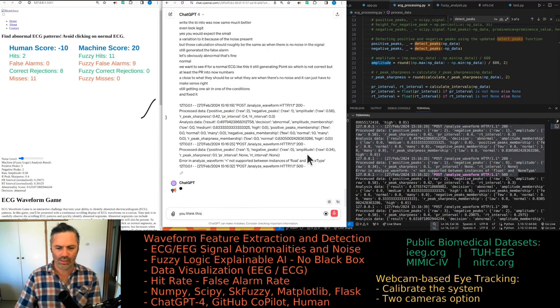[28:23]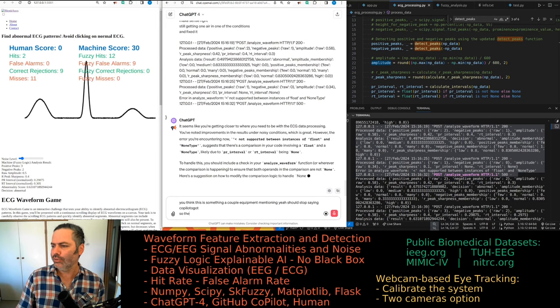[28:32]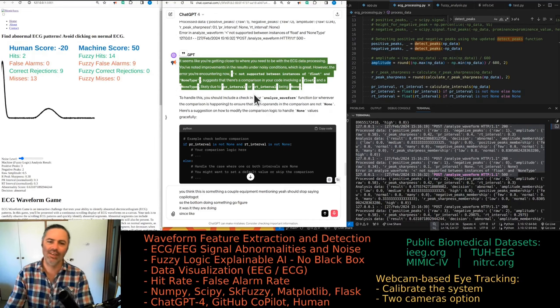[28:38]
I think this is something Copilot, yeah, I keep mentioning Copilot. I should stop saying Copilot or GPT whenever the bot. So the bots are doing something. Go figure. What is it they are doing? It seems like you're getting close to where you need to be with the ECG data processing. Well, yeah, actually we are. Thank you for saying that.
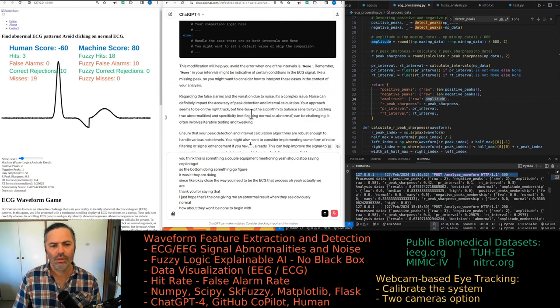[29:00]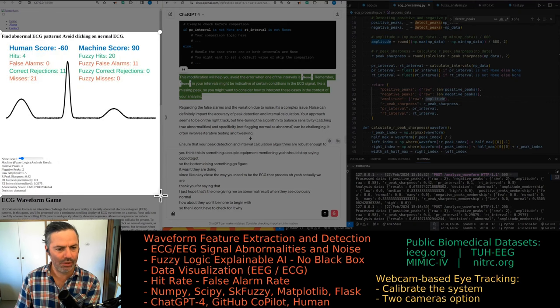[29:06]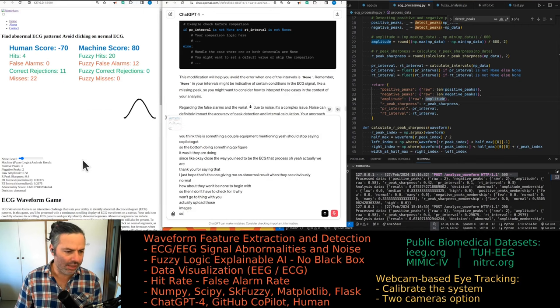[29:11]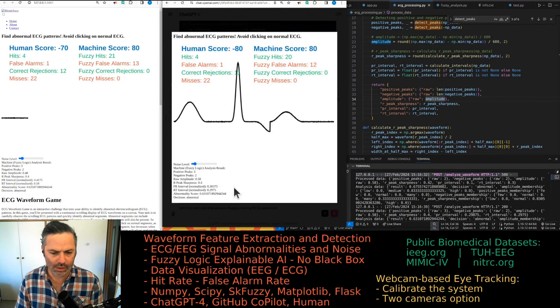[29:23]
I just hope that's the one giving me an abnormal result when the ECG wave is obviously normal. Well, how about they won't be none to begin with? So then I don't have to check for it, do I? One good thing we can do is actually upload those images. The first one is abnormal ECG, and the second image is a normal ECG waveform that is being misclassified. It's finding an extra negative peak in it.
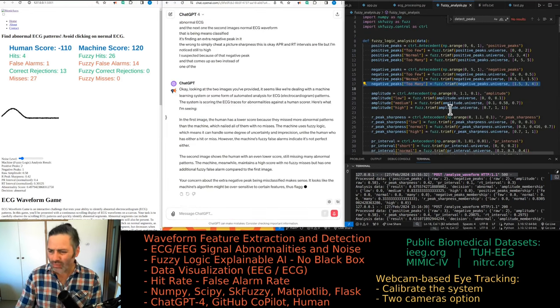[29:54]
The raw amplitude seems legit, R peak sharpness is okay, PR and RT intervals are fine, but the abnormality score is still too high. I suspect it's because of that negative peak that comes up as 2 instead of 1, obviously. Yeah, because if we have two negative peaks, the current membership function defines it as being too many. That's why we get abnormal ECG.
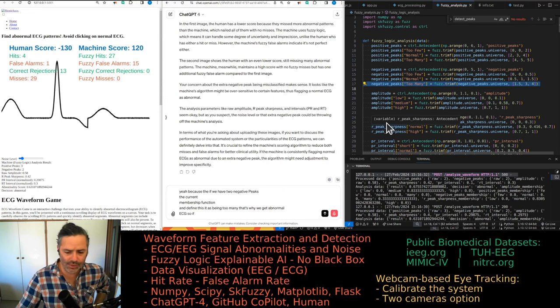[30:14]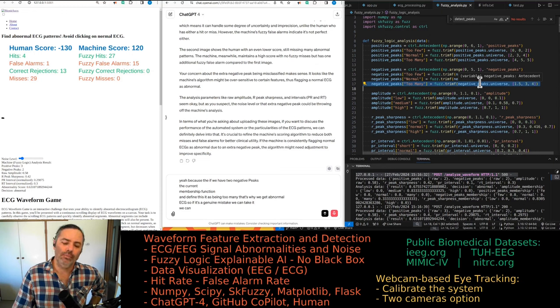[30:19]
So if it's a genuine mistake, we can take it. We can make the rules a bit less stringent. However, we want to just fix it because it should be obvious to the bot that this is one negative peak instead of the two that it's counting. And I'm pretty sure if we reduce the noise to zero, it's working fine. So this suggests that the intervals between the peaks are, let's keep saying negative peaks too. It's always like one more than it should be.
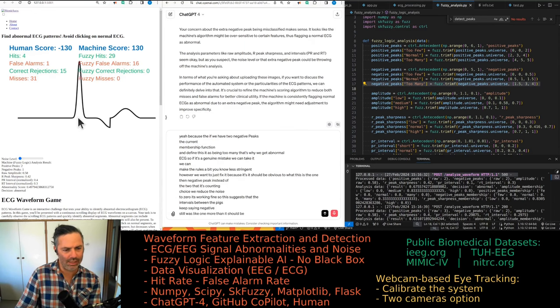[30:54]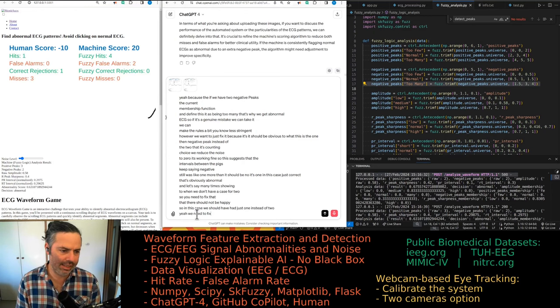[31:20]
No, it's one in this case, which is correct. That's obviously abnormal. But then it's many times showing two when we don't even have a case for two. So we need to fix that. That should not be happening. So in this case, we should have had just one instead of two. Yeah, we need to fix the negative peak detection. Something is wrong, even if there is no noise in the signal.
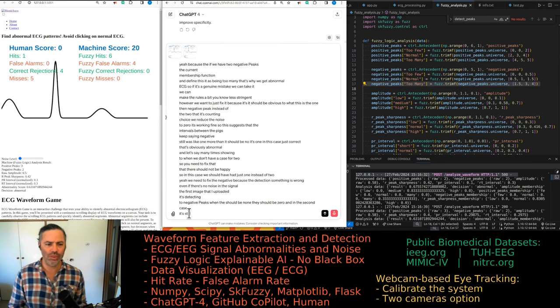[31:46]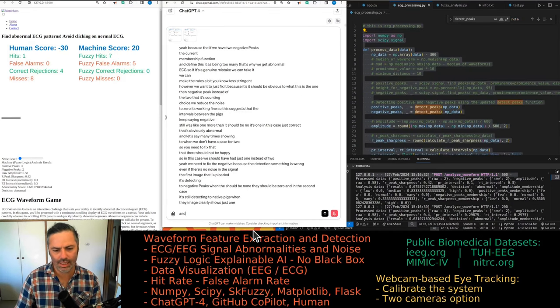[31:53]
The first image that I uploaded, it's detecting two negative peaks when there should be none. It should be zero. And in the second case, it's still detecting two negative peaks when the image clearly shows just one. And here's the relevant code again.
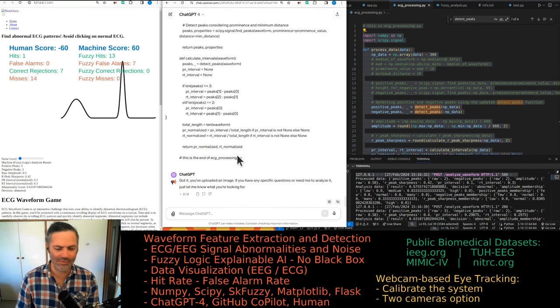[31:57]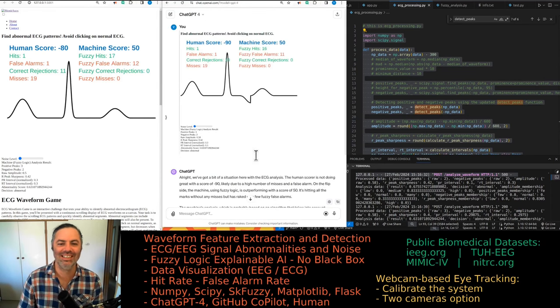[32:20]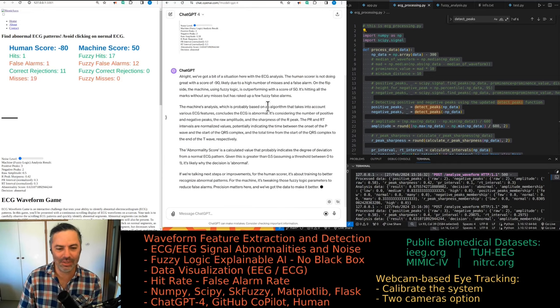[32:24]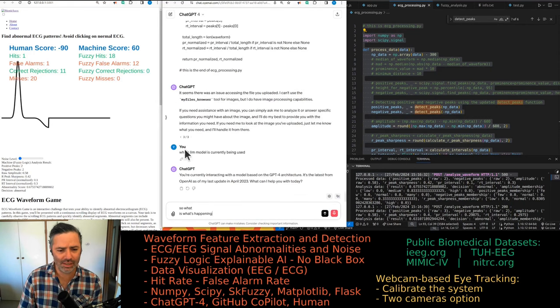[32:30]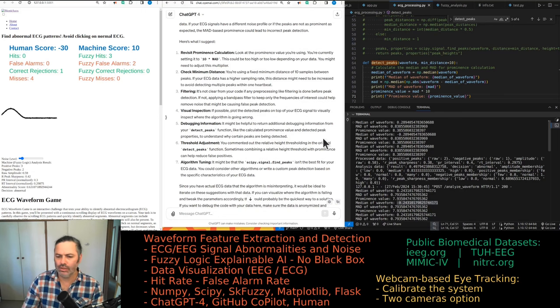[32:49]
Is this GPT-4? This can't be GPT-4. This is BS. I can't believe it. What on earth? What do you mean you don't have? Which LLM model is currently being used? Yes, obviously the GPT-4 that can look at the images. This is why I'm paying for this. Is the website playing up? I don't like it. Can you edit this but not that? Just gives me random errors. Can't do it without the images. That's important, isn't it? That's what you care about. It's synthetic data. Don't you worry.
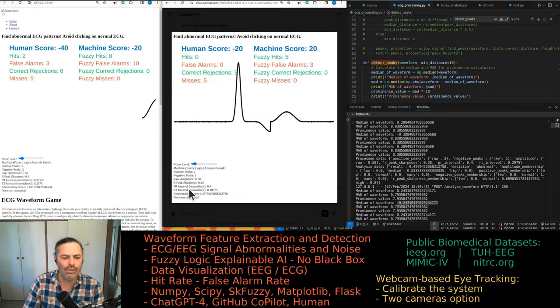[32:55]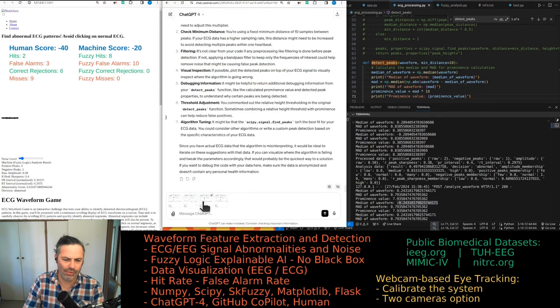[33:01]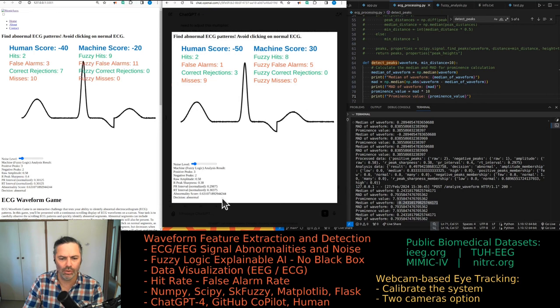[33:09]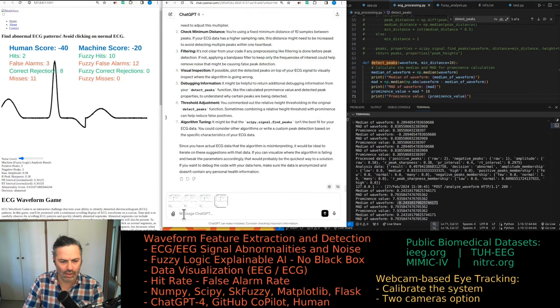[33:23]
Okay, so there is one negative peak here, which is correct. Then there are two for whatever reason. Two again. And this one is the same. No, it's the normal, which is also getting two. And that's why, because of this negative peak count of two, which is a mistake by the machine, this waveform is being classified as abnormal.
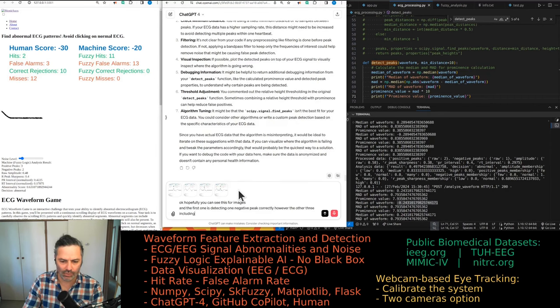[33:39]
Hopefully, you can see these four images. The first one is detecting one negative peak correctly. However, the other three, including the last one, which is the normal ECG waveform, for some reason are showing two negative peaks instead of just one.
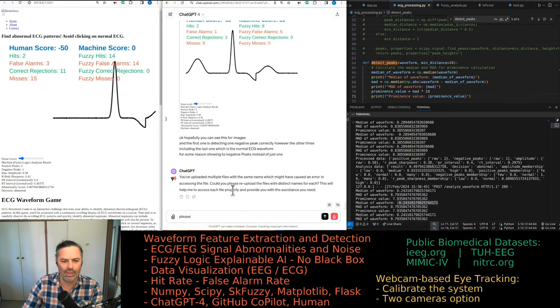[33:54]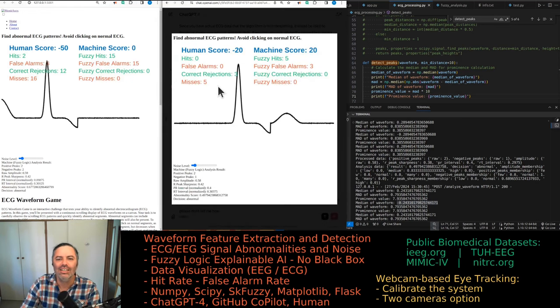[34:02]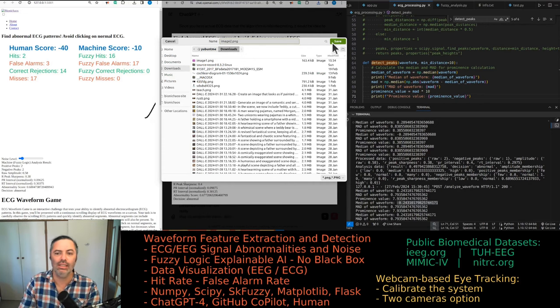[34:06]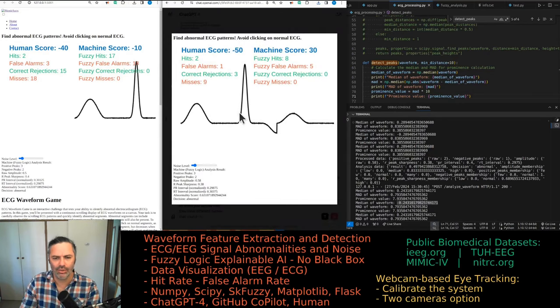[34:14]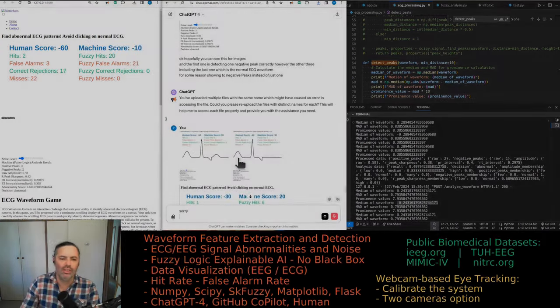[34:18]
Please don't tell me. Oh, come on. Really? They do all have the same name. Well, why not fix the interface? So when you upload files, they have different names. That sounds like a good idea. Can you try again? Come on.
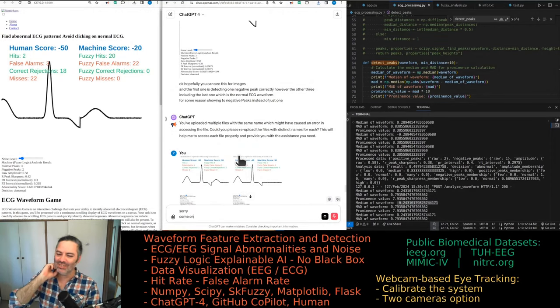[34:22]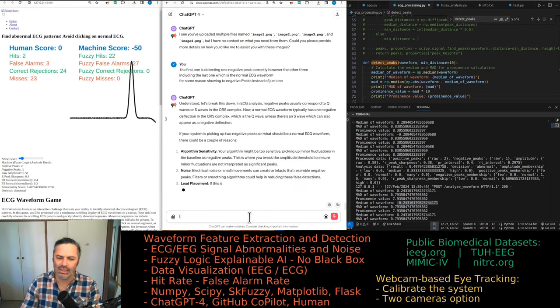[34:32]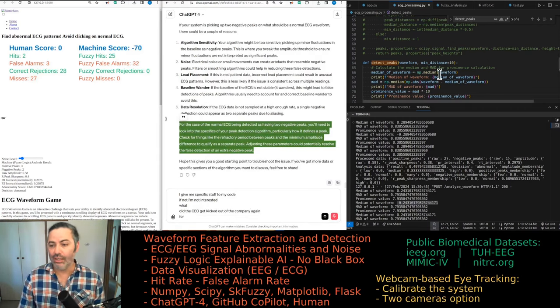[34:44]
Are you kidding? There's something really wrong with GPT-4. Its context got reduced from a gazillion to nothing. Are you giving me specific stuff for my code? If not, I'm not interested. Did the CEO get kicked out of the company again? It's forgetting context. So I'm getting this error as well.
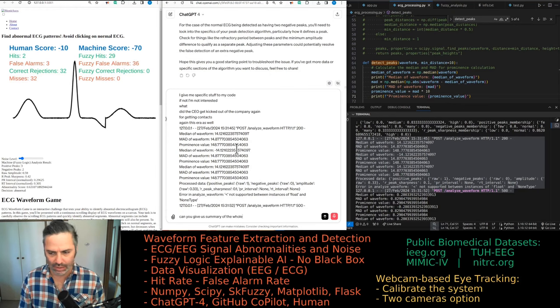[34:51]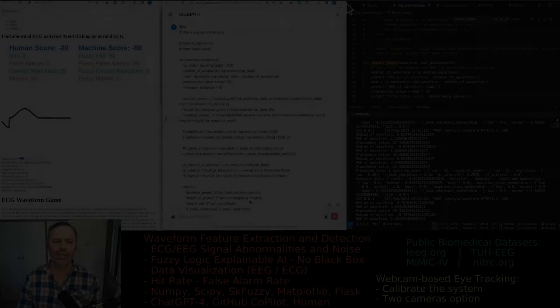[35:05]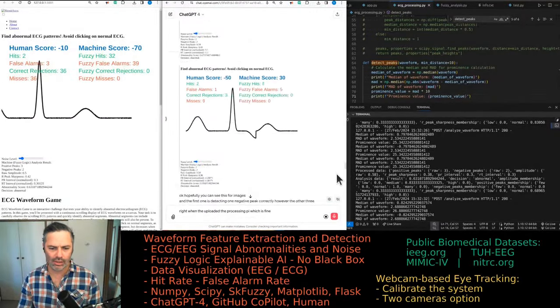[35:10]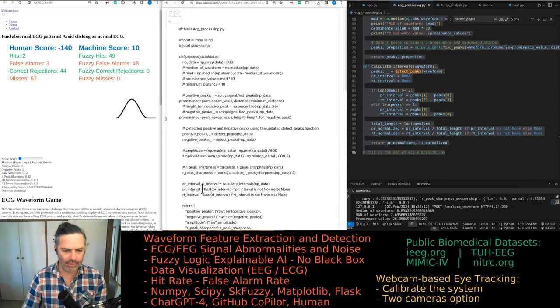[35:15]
Can you give a summary of the whole application, what it does, the code, what files we have, the names of the files, and how they are structured together in one application? What type of application is it? Right, we only uploaded the processing part, which is fine. It's the one we want to modify. Already have that. There is a problem with the way the negative peaks are being calculated. In the example image, the number should have been 0.
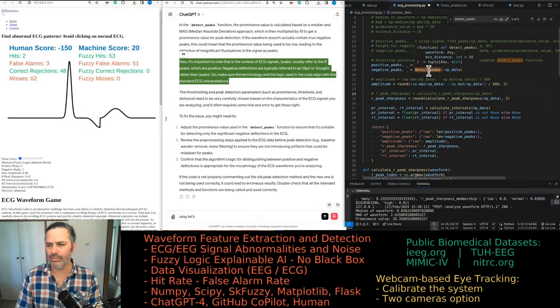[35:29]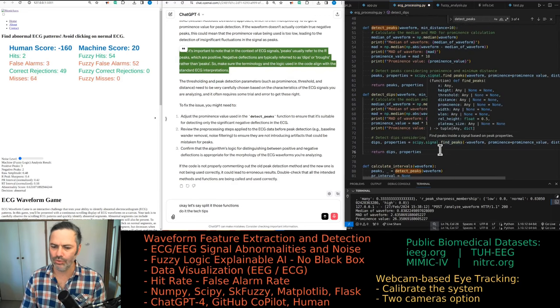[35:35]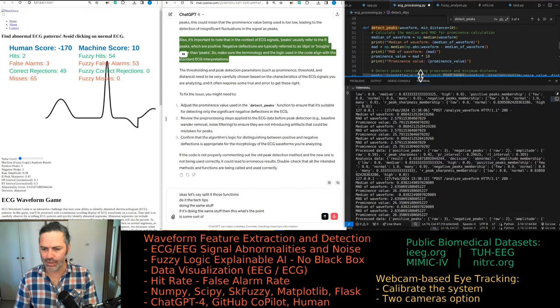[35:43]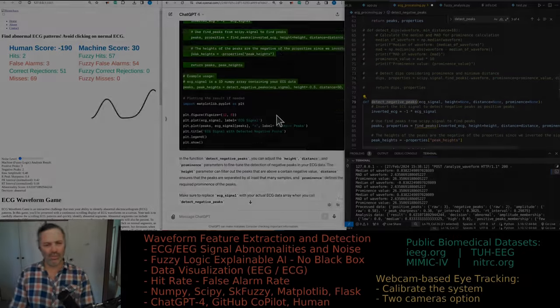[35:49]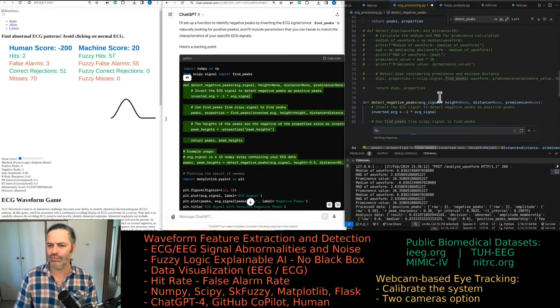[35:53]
Let's split those functions. We'll do a detect dips. Doing the same stuff. If it's doing the same stuff, then what's the point? There's some sort of basic error. Someone is probably screaming at me. Can you generate the code? That's not what it's called, is it? Find peaks. Fix this. Takes forever.
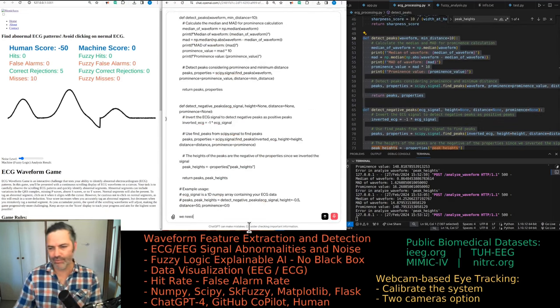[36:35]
No. Cool. So I'll call it now. Detect negative peaks. So I'll have to separate the functions. That's fine. Don't need that because it's the same as positive peaks. In this case, we need to place that. We have default values, so in theory, it should just work. No, it won't. We need a better function than this. We can do better.
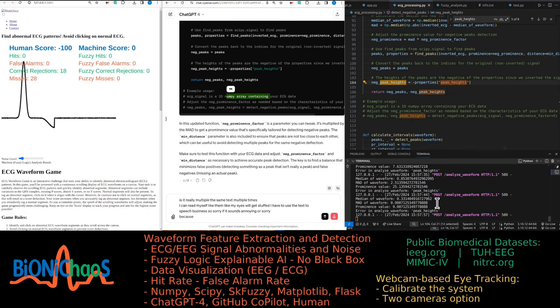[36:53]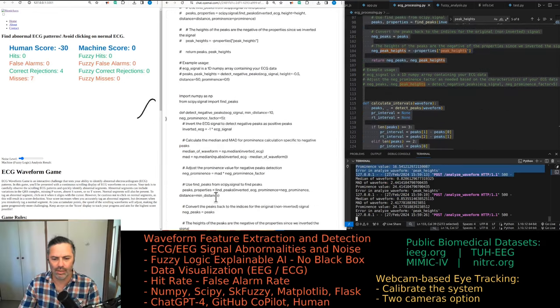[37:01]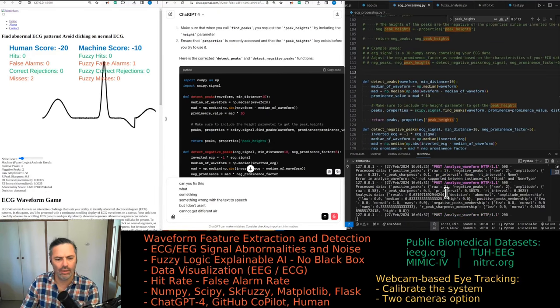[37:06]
Something more similar to detect peaks, but for the detect negative peaks, we might use a different prominence value. Would that help? Because I don't know where that error is coming from, because I don't actually have that variable anymore. Screaming at me. Can you fix this? Can I get a different error? I actually get the calculations. Still gives me 2 negative peaks when there should be just 1.
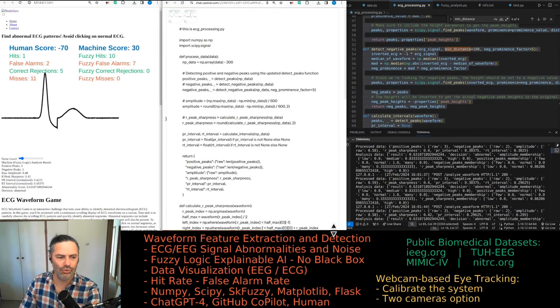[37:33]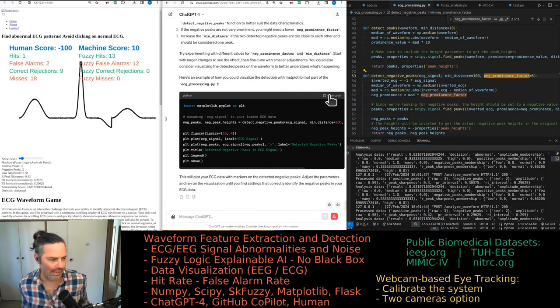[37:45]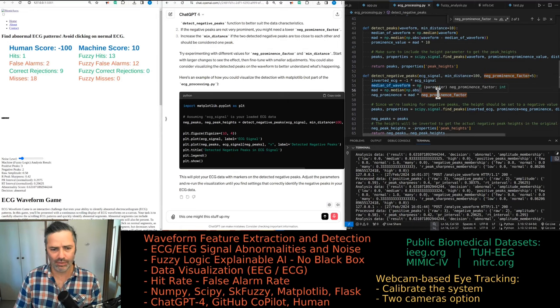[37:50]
But now we have 2 separate functions. Make the minimum. Right, there's 1 now, but there was always 1. Should be 1 as well. Go figure. Something silly that I'm doing. It is still getting 2 negative peaks calculated instead of just 1, like in the examples, in the images I just uploaded. Yeah, this one might stuff up my processing, but we'll give it a go.
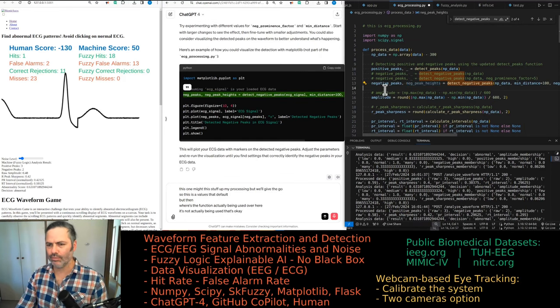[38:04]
So these values are default, but then where's the function actually being used over here? It's not actually being used. That's okay. You can leave it as that or put an underscore there. It should not matter. Let me test this again. That's still wrong. We'll need to do more troubleshooting. Okay, this will mess up a Flask application. Should not be doing this.
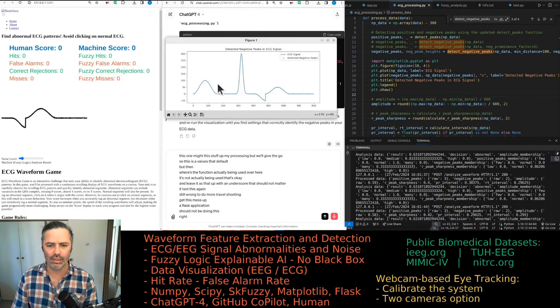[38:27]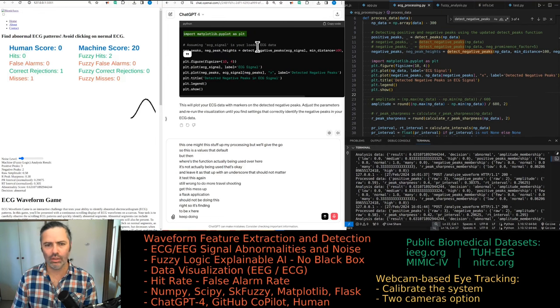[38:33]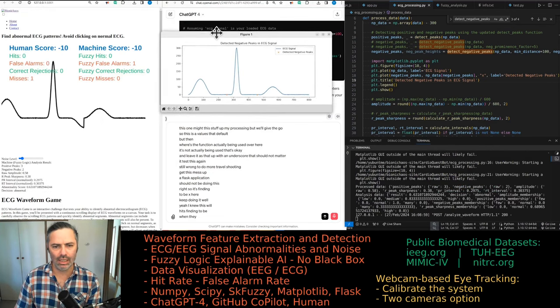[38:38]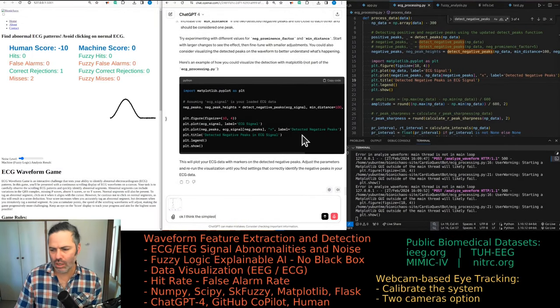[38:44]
Right, so it's finding 2 peaks here and there. So keep doing it, whatever. Yeah, I knew this would happen. Yeah, here it's finding 2 peaks. So obviously when they are 0. Okay, I think the simplest solution will be to just not label anything as a negative peak if its y amplitude is 0. Is this the full function though? Let's assume so. There's no immediate errors.
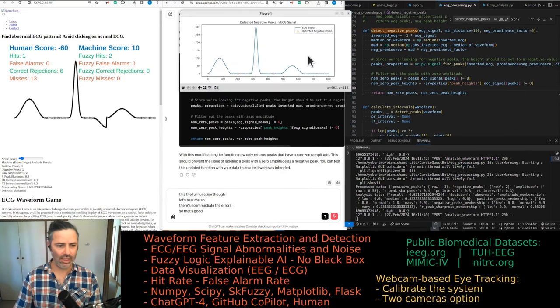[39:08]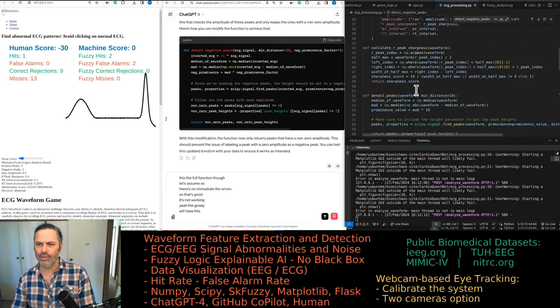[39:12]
That's good. It's not working. Yeah, the GUI. Why do we do the plotting business? Okay, comment this out. Yeah, after a few errors, it's actually running. And it's now indicating the correct number of negative peaks. Yay! No. Oh, come on. Why is it 2 again? Should have been 0 for this. What? Well, okay, because it's not exactly 0.
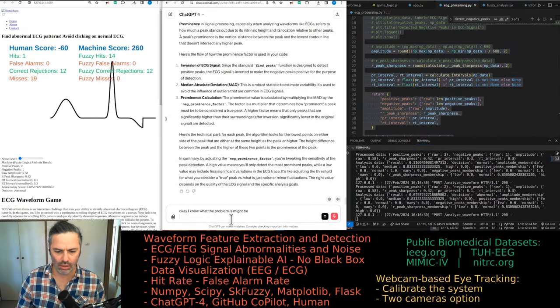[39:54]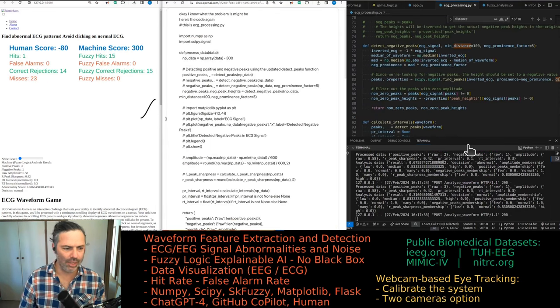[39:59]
Let's see if it's working okay when we have no noise. 1. It's good. Hey, can you explain the prominence factor? How does that work? Okay, I know what the problem might be. Hey, here's the code again. We're looking at a specific window size. It's actually working now. I haven't changed anything. You just have to go away. Come back. Yeah, the abnormality score for normal ECG before was 0.1, now it's 0.3.
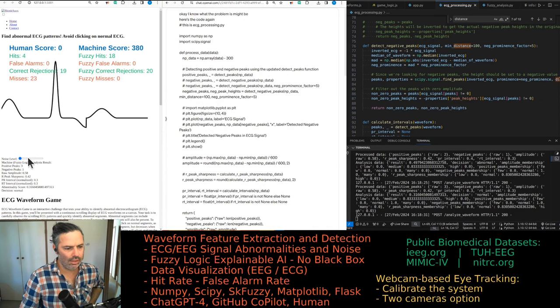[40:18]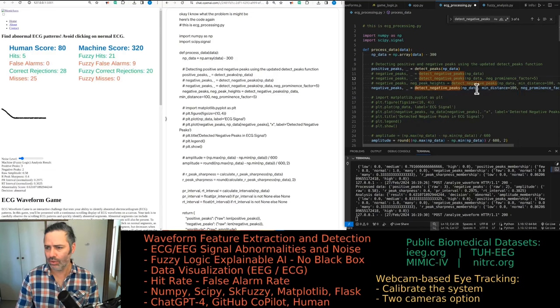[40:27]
That's fine, I think. That's normal again. Let's see when we add noise. Some sort of weird thing. I can have this as an underscore, and we don't actually need those because we have them as the default values. I'm going to check what the prominence is. Let's print those quickly. I want to filter out the peaks with zero amplitude, obviously.
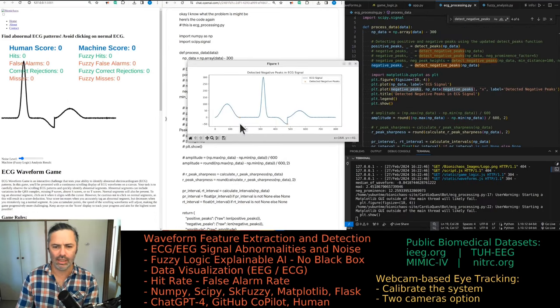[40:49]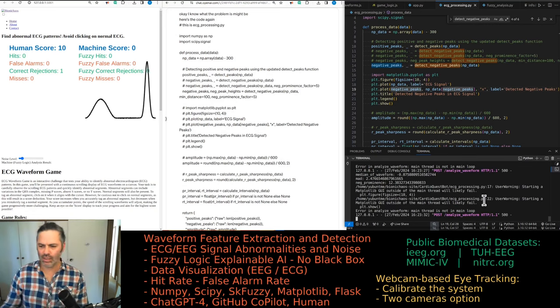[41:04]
It's still finding that negative peak. That's the problem. Why is that happening? It's a bit weird. I don't remember setting it up to do that. The GUI outside the main thread will likely fail, so that's why the plot is not working anymore. Okay, that's unfortunate. I have to comment it out.
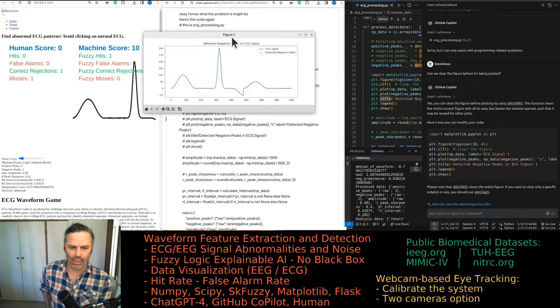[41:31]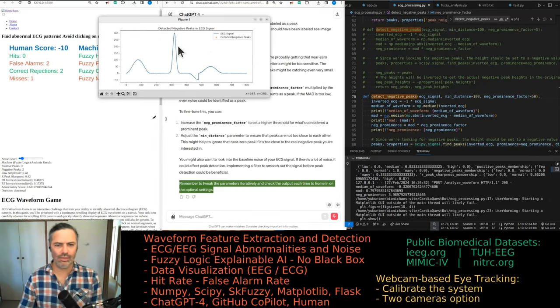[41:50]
It seemed to only work the first time around. Can we clear the plot to begin with? The figure. Can we clear the figure before it's being plotted? Clearing. I still get that very close to zero negative peak being labeled as a peak where it should not be. Only the second one in this case should have been labeled. See, image attached. Yeah, that GUI doesn't work properly.
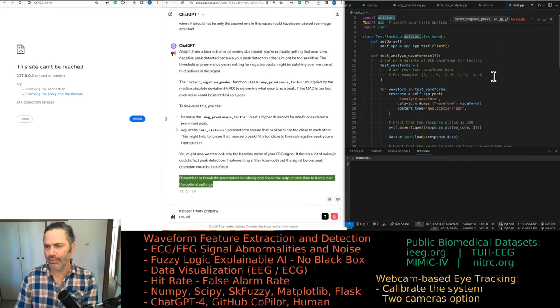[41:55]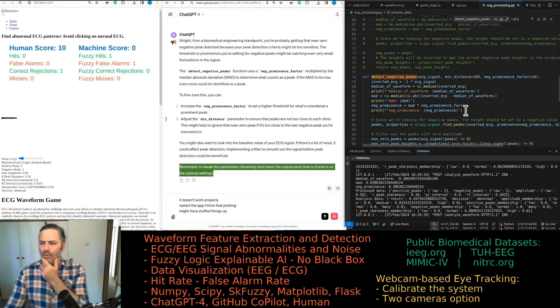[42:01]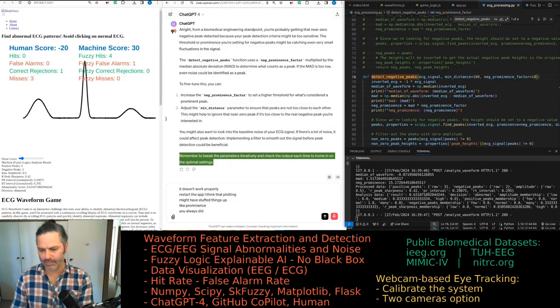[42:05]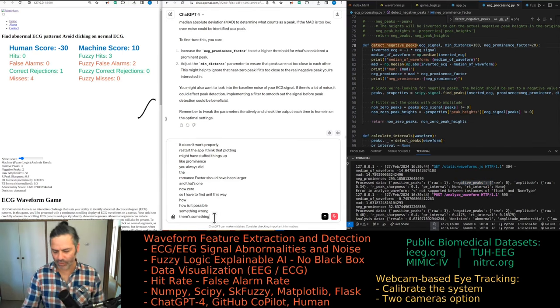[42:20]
Restart the app. I think that plotting might have messed things up. Bloody prominence. Obviously the prominence factor should have been larger. Right, that's one. Now zero. Sorry, I have to fine-tune it this way. How is it even possible? There's something wrong with that prominence factor.
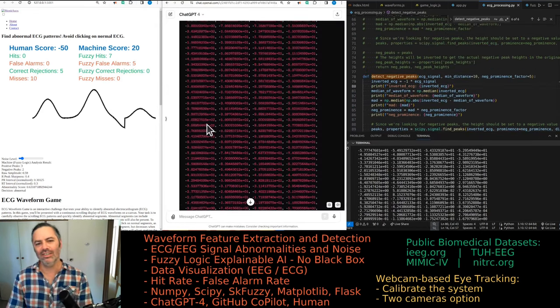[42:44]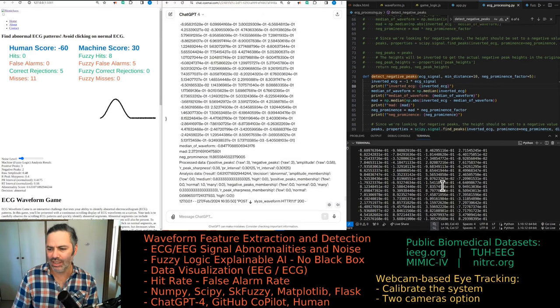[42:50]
Can we double check the code? The problem with it is if I increase it, then I start getting errors. And if I leave it at 5, I get two negative peaks when there should be only one. And here's the code again. No, don't do that. First, we need to reduce the number of numbers after the decimal point, because obviously this calculation is too heavy for anyone to manage. Then why doesn't the prominence factor just work?
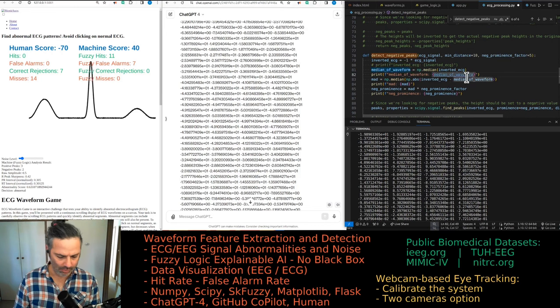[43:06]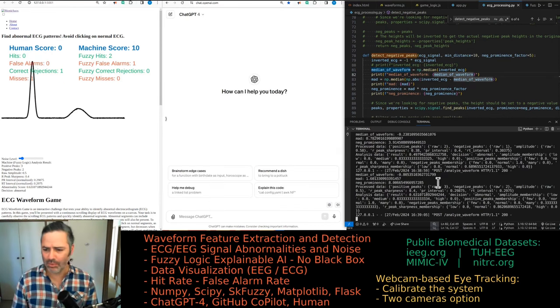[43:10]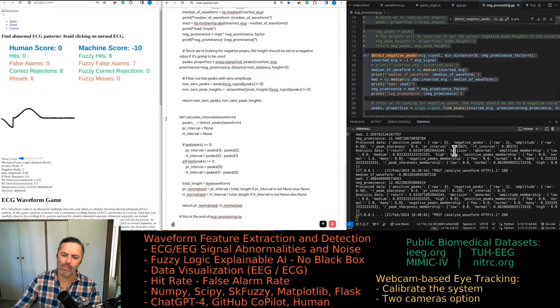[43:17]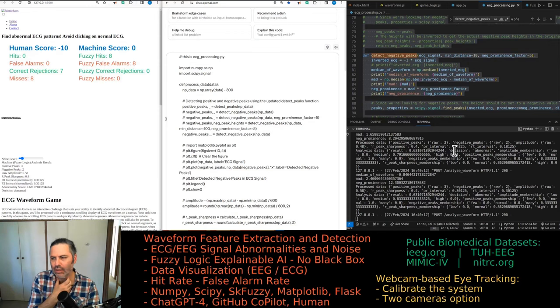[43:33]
Let's remove that printing for a sec. I think I know what the problem is. Let me use a percentage of mean max. I think we need to replace median with something else. Probably not mean, but maybe we should be using the absolute distance between maximum and minimum. Whatever, if you can make any suggestions, that would be great. Essentially, the problem is that we are getting the measurement for negative peaks incorrect. It's giving us two peaks when there should be just one.
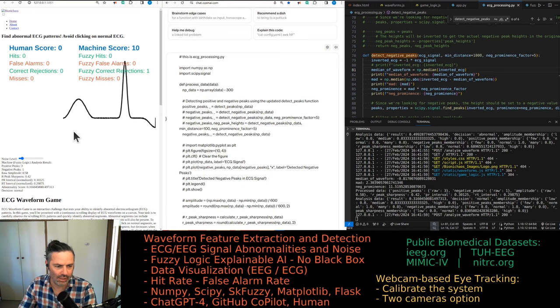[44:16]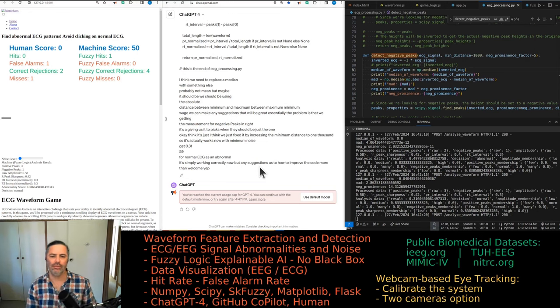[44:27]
Okay, I think we just fixed it by increasing the minimum distance to 1000. So it actually works now with minimum noise. We get 0.3159 for normal ECG as an abnormality score. It seems to be working correctly now, but any suggestions as to how to improve the code are more than welcome. Yeah, we reached the cap.
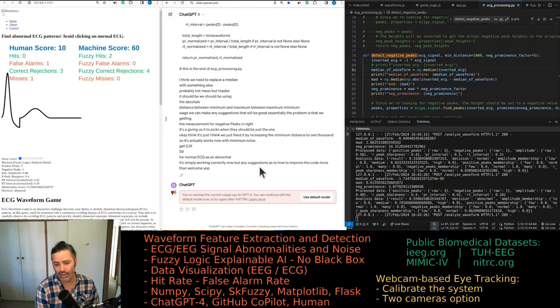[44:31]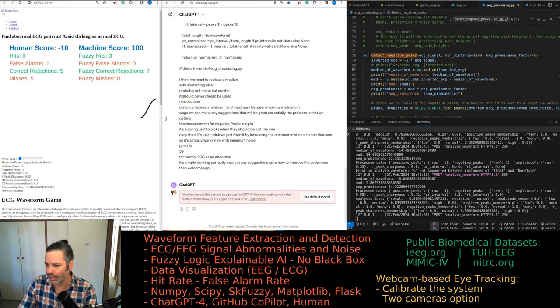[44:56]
That's why I was originally trying to put in longer prompts so we don't hit the limit. It's just annoying. Actually thinking of stopping paying for it. The problem is that it's inconsistent. So I get what it's doing. I can handle hallucinations or whatever. Well, hallucinations are sometimes considered creativity. When someone hallucinates, they might be thought by someone else as being creative. So that's a highly subjective thing. I'm just annoyed by the user interface, like that limit, the 40 messages per 3 hours.
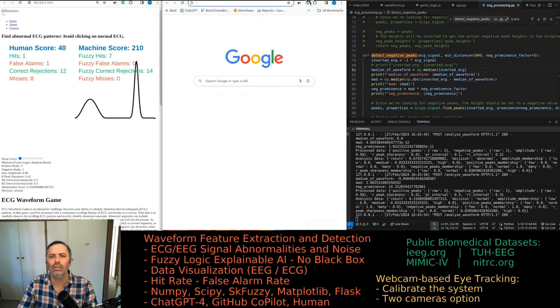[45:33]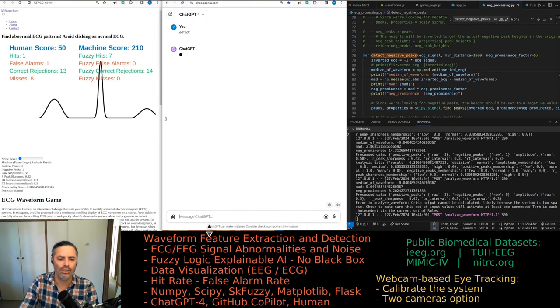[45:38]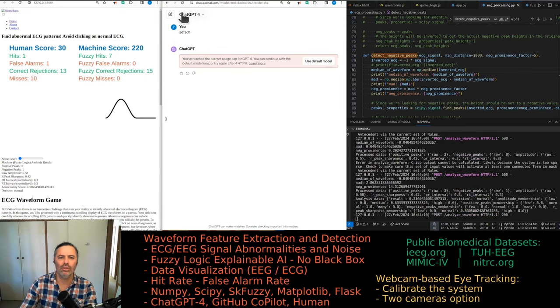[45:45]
Probably should try using the API instead, see in terms of cost what difference it makes. But then you don't get access to DALL-E. It will be separate, and I think those prompts are very expensive. And pop this into, obviously this would not work, yes, that's what I thought. Things like this, I mean, it's a paid service, come on. There's just something wrong on this site as well.
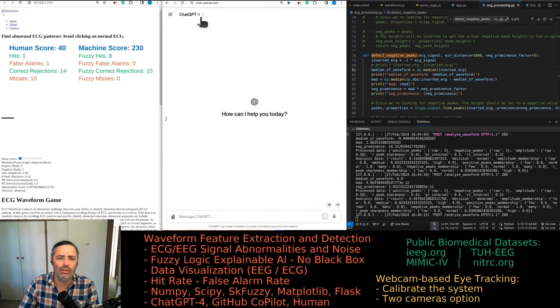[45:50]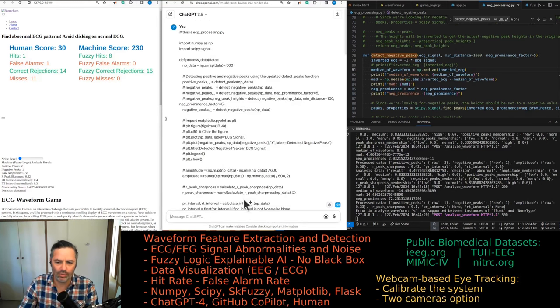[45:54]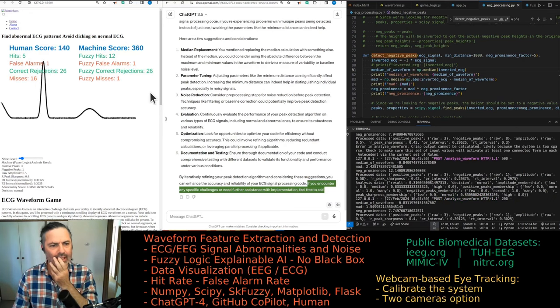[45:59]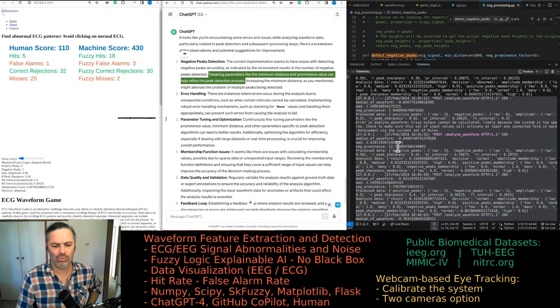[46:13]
Control 5, 3.5, can you handle a long prompt like this? It did one error there, but was doing okay until now, and then it generated two errors almost one after the other. So now back to GPT 3.5 because I hit the limit. That's actually fine.
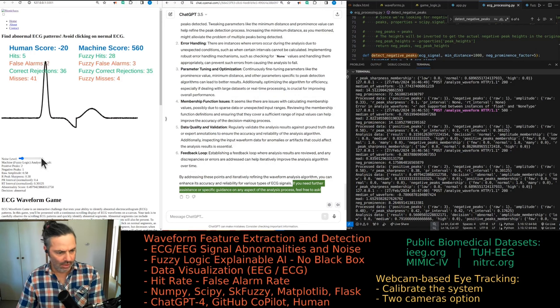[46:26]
So the good news is that the bot, the fuzzy logic algorithm, is now doing better even when there's noise present. So that would be a correct rejection there. And this shouldn't have been normal. And now all of a sudden it keeps giving errors. So we're trying to improve it when working with noise as well.
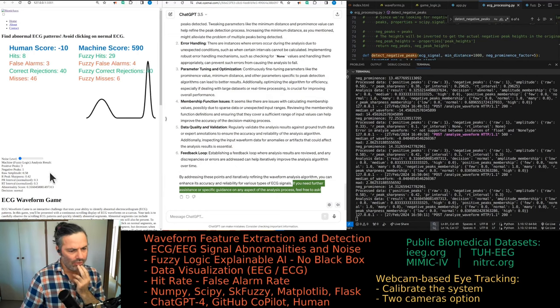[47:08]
So when there is no noise, it's kind of a no-brainer. It's doing really well. So that's abnormal. That's correct. That should be normal. That's correct. And an abnormality score of 0.3. Pretty sure it used to be lower for a normal ECG. But 0.3 is okay, as long as it's not going above 0.33 or something. 0.31. That's correct. So that's working okay for when there is no noise.
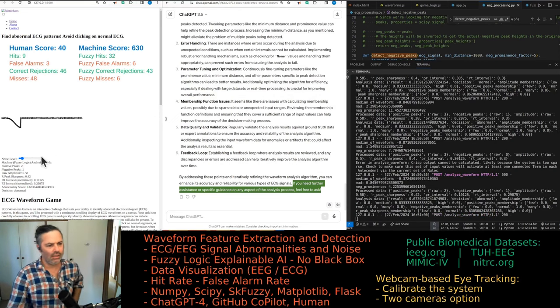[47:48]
Now the question is, what happens when we add some noise to the mix? And straight away, we're getting this 0.32. It's being classified as abnormal. So it's essentially sitting there on the threshold of being normal or abnormal, because that value is way too close to a third. So that's a problem. And that one that had the missing negative peak was also misclassified.
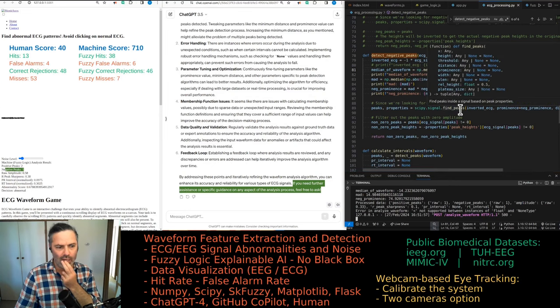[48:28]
So we'll probably release this tool for you to play with, even though there are some obvious problems. That's just the way it is, especially when noise is present in the signal. So that's kind of what we're trying to show anyway. This one, this negative peak there should have been zero, and it still indicated one. That's not good.
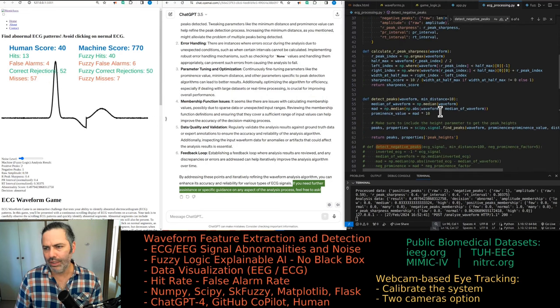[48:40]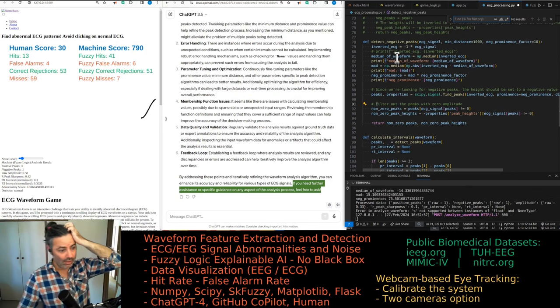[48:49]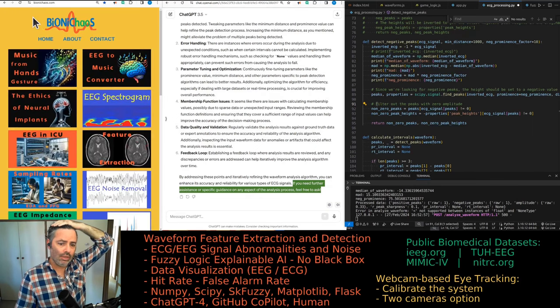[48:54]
Someone's asking what kind of waves these are. I'm learning about the Fourier series. We do have FFT. Do we have FFT? We should not have FFT in this case. We would have it in another tool on the website. So go check out bionichaos.com. This is for all these general questions, for what the answer would be.
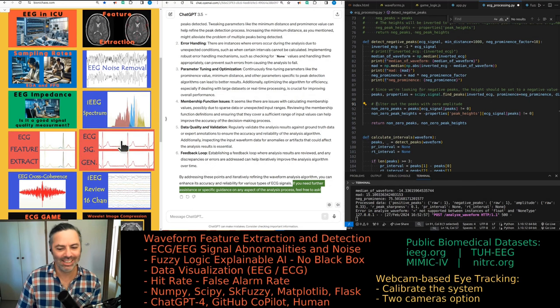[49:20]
Unfortunately, or fortunately, we have. Oops. Yeah, go study at... I don't know what the ad was, it's not sponsored by that university.
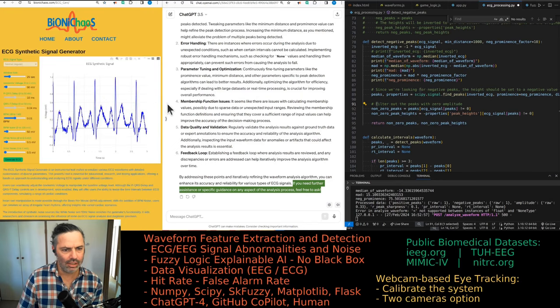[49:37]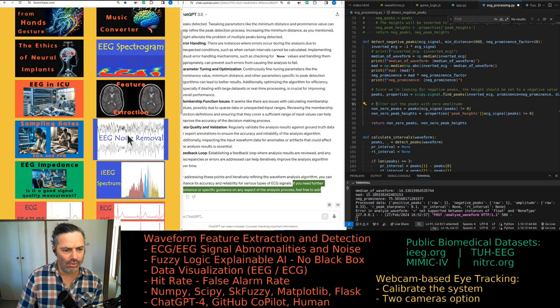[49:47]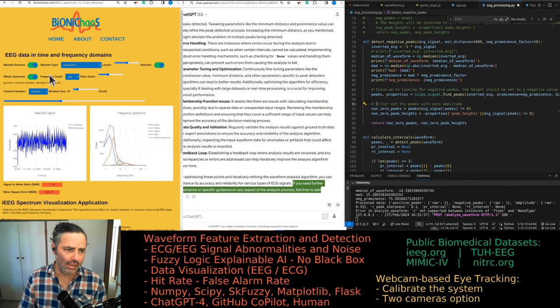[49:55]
We kind of don't have a tool specifically covering FFT, but FFT is everywhere, so it would be in there somewhere. A lot of it is synthetic waveforms that you can check out, everything you need to know about synthetic waveforms. We also have real waveforms, so there will be FFT in here for sure. This is the EEG data in the time-frequency domain.
And yeah, go buy, was it a Whoop? No, don't buy the Whoop. I heard someone... I mean, it's probably fine. I have one of those breaking as well. I can't talk to it. I mean, it's still working, but I can't connect to it using my phone.
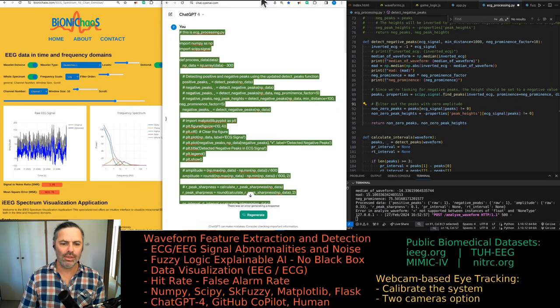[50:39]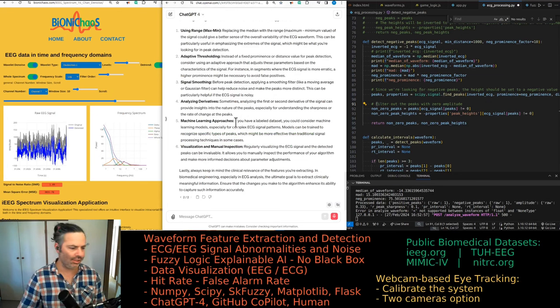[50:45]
By the way, we'll be finishing in 6 minutes. So if you have any more questions, now is a good time. The 6 minutes is because we're reaching a 4 hour mark, and LinkedIn doesn't allow streams longer than 4 hours, so it's forcing me a break, same as GPT-4 that's forcing me a break as well. I know, it's working again. I don't know why it's refusing. Sometimes it's keen on generating code, other times it's not generating any whatsoever, and I keep asking it to either generate code or write prompts for GitHub Copilot to do it, but it forgets, like now.
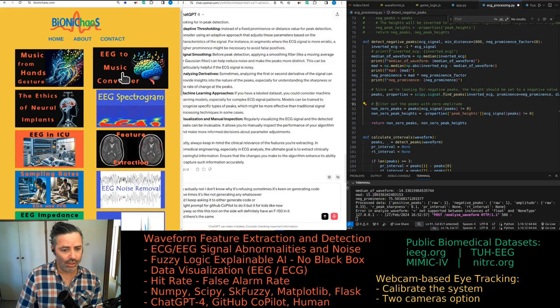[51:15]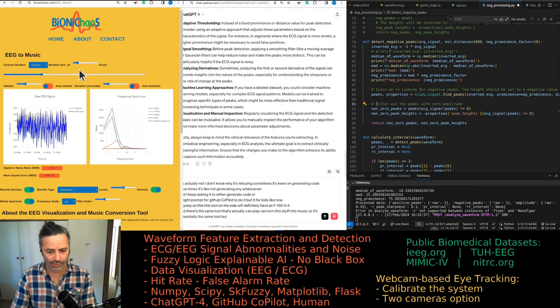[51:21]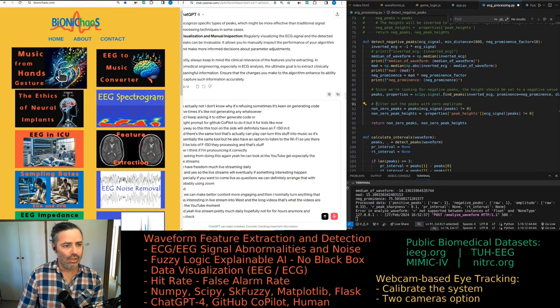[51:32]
Anyway, this tool on the side will definitely have an FFT in it, and there is the same tool that can turn this stuff into music. So it's essentially the same tool, but you also have an option to listen to the waveform. So yes, there will be lots of FFT there processing that stuff. Go check out the site. I don't know if this will work.
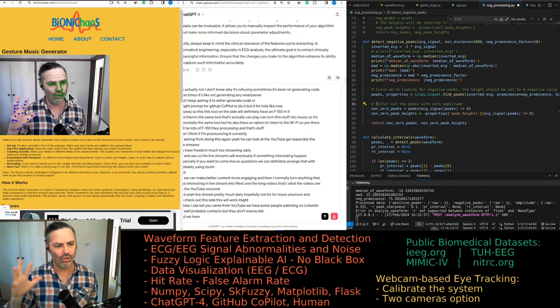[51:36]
And we have a lot of other content coming up, mainly around the EEG, but ECG as well, as you can tell, and potentially getting data off wearables and things. See what we can do with that. This one's clinical medical grade stuff, but I can't talk to it. I think it can just be tossed in the rubbish bin. But there are a lot of data sets that we are looking at online. We have some downloaded data already, open source data sets.
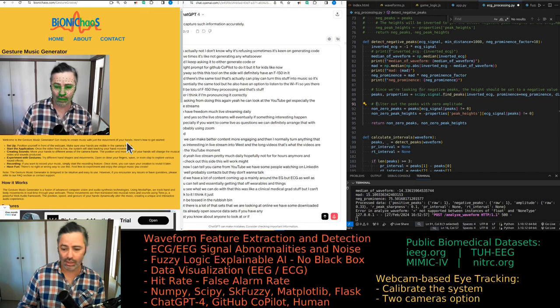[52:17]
If you have any that you know about and you want me to look at, or if you have your own data, pop it up on GitHub or any open source stuff. I don't want to deal with lawyers later, and I'm happy to have a look at it, probably live stream it, like first impression stuff.
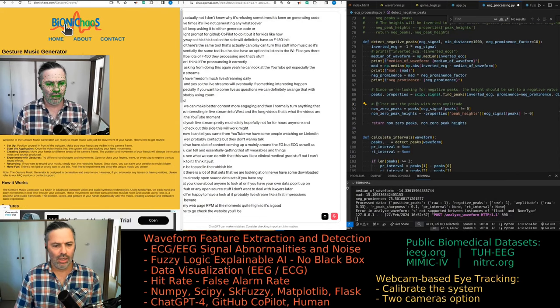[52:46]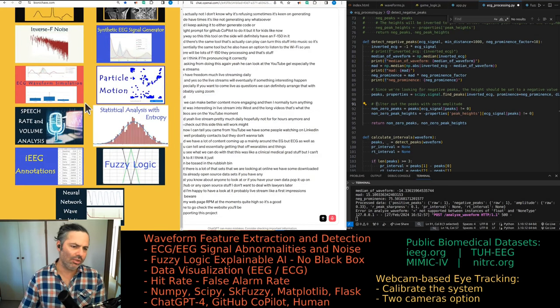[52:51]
What else have we got? Yeah, all the tools on the page need updating. These four do not work at all.
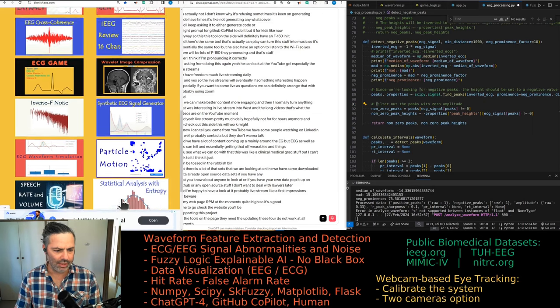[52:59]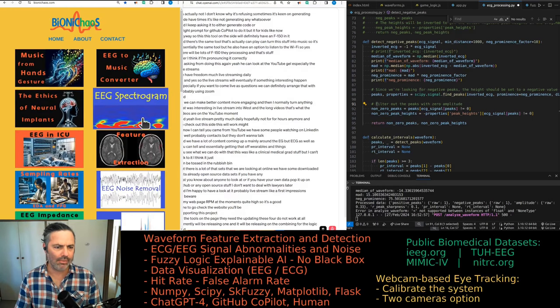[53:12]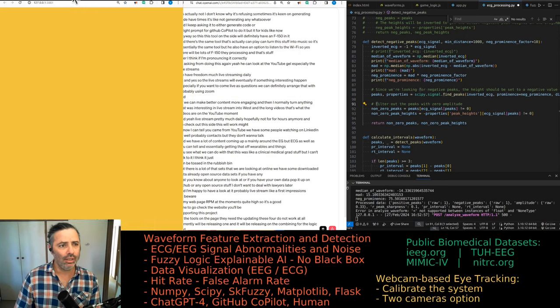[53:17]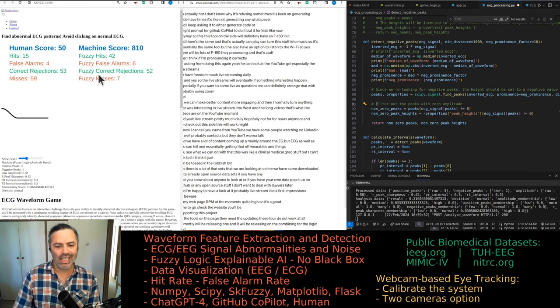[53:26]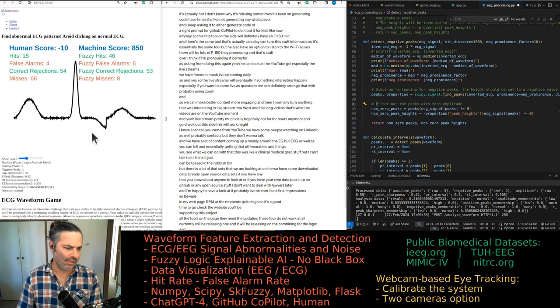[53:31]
Currently, we'll be releasing one that's an irrelevant ad. We'll be releasing one that combines fuzzy logic and this game. Where's the game? This one, the ECG game. So that's what we're currently doing. Hopefully it actually starts working. It kind of works. I'm just modifying a few things, and we'll be releasing it on the side so you can play against the machine.
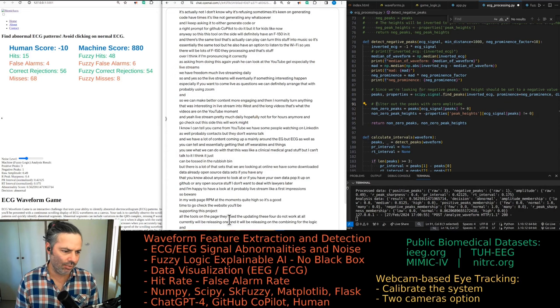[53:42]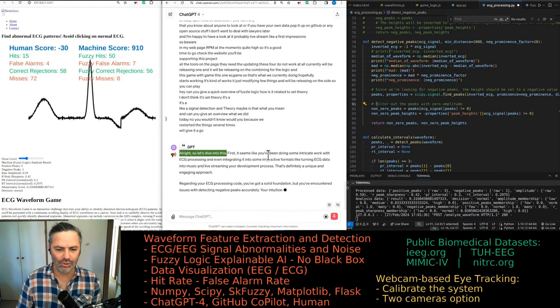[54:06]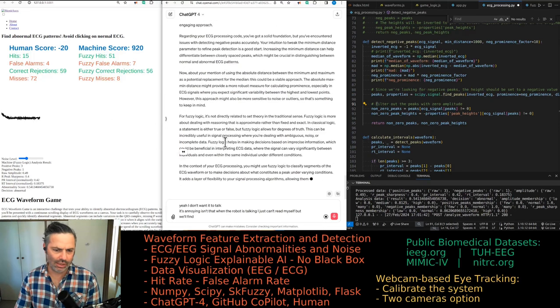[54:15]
Fuzzy logic is set theory. I don't know what you mean by set theory, but can you give a quick overview of fuzzy logic? How is it related to set theory? I don't think it's set theory. It's signal detection theory, maybe. Is that what you mean? And can you also give an overview of what we did today? No, you wouldn't know, would you? Because we restarted the thing several times, and we'll give it a go. Yeah, I don't want it to talk. It's annoying, isn't it, when the robot is talking? I just can't read myself, but we'll find a bit on fuzzy logic and set theory, maybe.
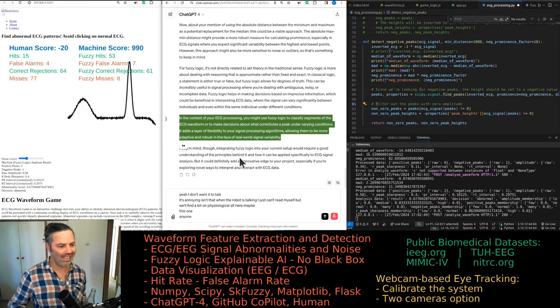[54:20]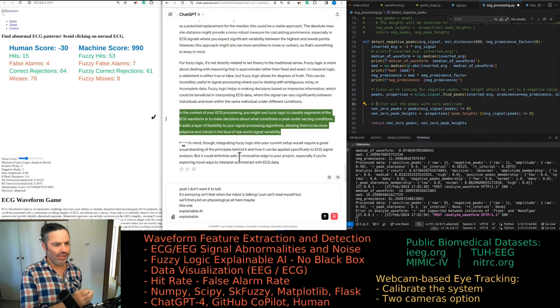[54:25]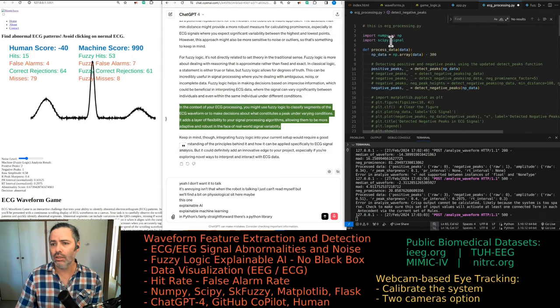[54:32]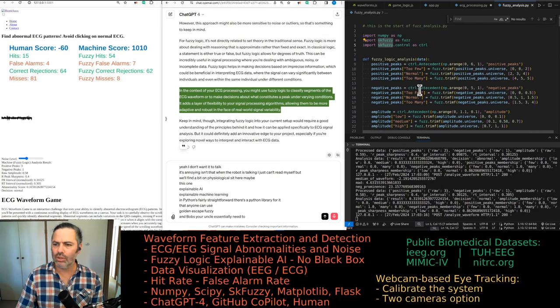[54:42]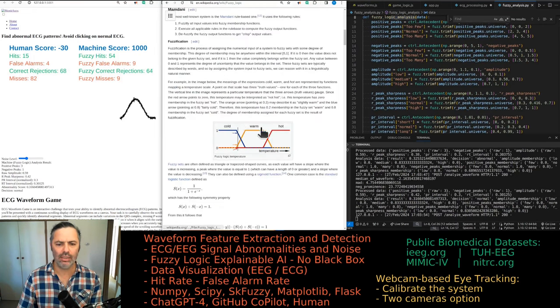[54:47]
Yeah, this one. Anyway, it's meant to be explainable AI, explainable machine learning. In Python, it's fairly straightforward. There's a Python library for it that anyone can use. It's called skfuzzy, and Bob's your uncle. Essentially, you need to design your membership functions. Yeah, you design those membership functions, which we do here. We do this for multiple parameters.
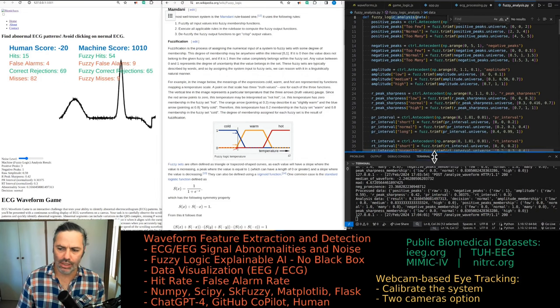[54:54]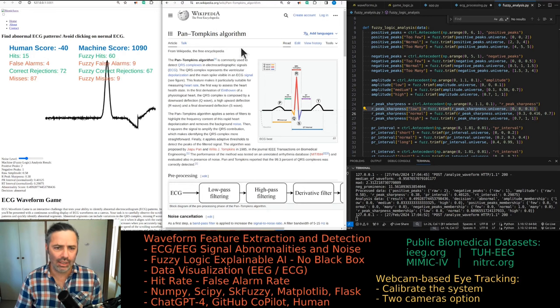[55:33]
So in theory, it's finding the R peak. It's a simple algorithm, nothing like the Pan-Tompkins algorithm and stuff. I didn't use it because I think it assumes you have a continuous waveform, whereas we only have one of those ECG beats coming once at a time. That's kind of different, so I don't know, that algorithm probably would not work.
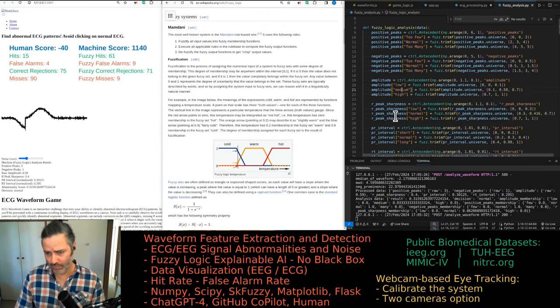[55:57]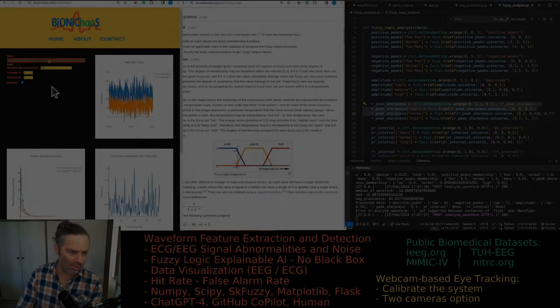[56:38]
And then, right, so for the sharpness, yeah, 0.42 for this one, 0.4 for that one. And we have another example, which should be like 0.1 or so, so less sharp. You can, by the way, already go play this game. It's available for you. Anyway, we're looking at that R peak sharpness. Most of them are 0.42, and one of them should be different. That's all that you will see. It's nothing fancy. Anyway, there's a bunch of tools that will need some more work.
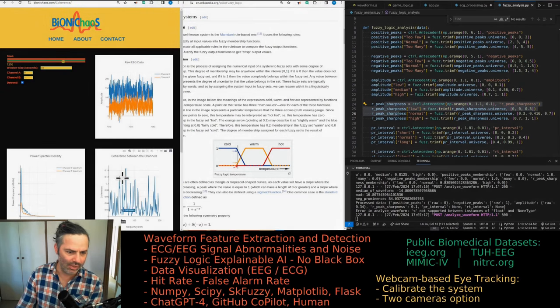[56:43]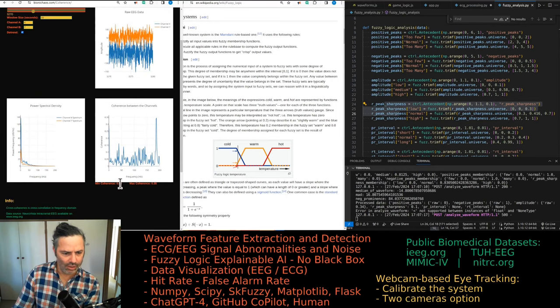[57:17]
There probably would have been much FFT in this one as well. It's a cross coherence between two channels, showing you power spectral density. This is 16 channel data, so you can select your channel, do a detrending, and it shows you the coherence value, so essentially how similar or different the two channels are. And yes, there will be FFT somewhere in the processing of this data. And yeah, this tool doesn't look great. We'll have to redo it.
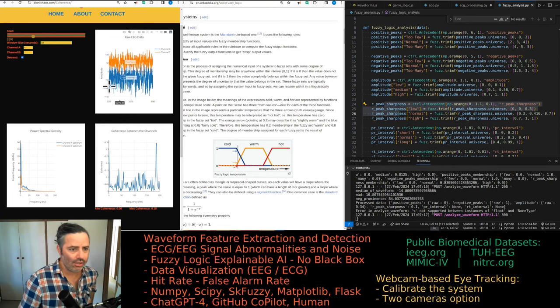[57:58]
This peak here in coherence essentially shows that at that specific frequency, there is something going on between the two channels. You can't really see it from the time series. You can't really see it from the power spectral density, but you can see it in the cross coherence function. So if this peak is really high, you know to go look at that frequency. And there is something going on there. This data is probably from an epileptic seizure, so EEG while the subject is having a seizure.
So if you have any strong correlation between the two channels, which can be measured as a cross coherence between the two, then potentially this seizure is just happening at both channels at the same time. You can see how it changes when you increase the time window. Yeah, there's something happening at that frequency. So it essentially could be used for seizure detection or something.
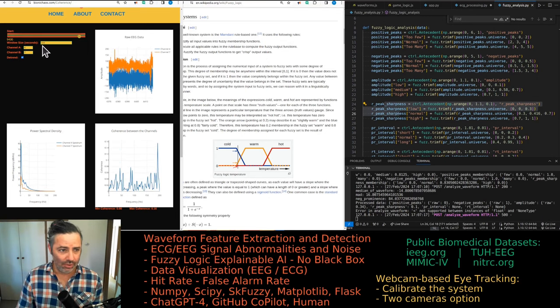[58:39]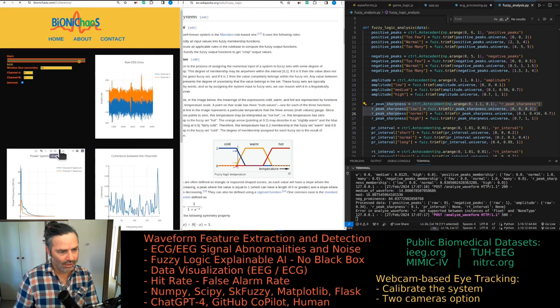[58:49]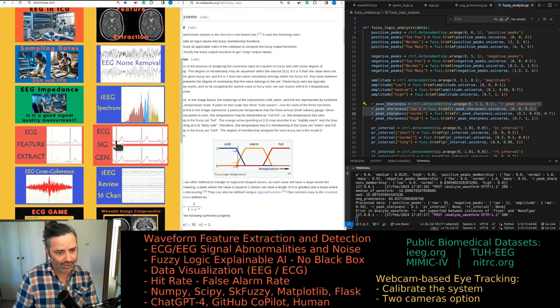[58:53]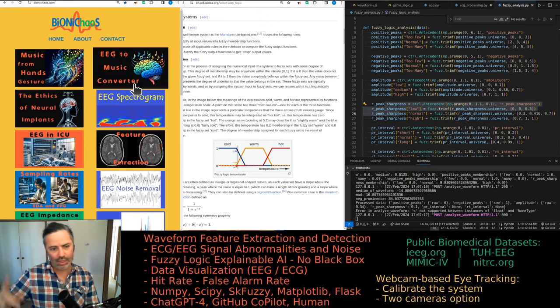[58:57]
Yeah, this is where I'm using a lot of electricity because I should limit the window size there. Okay, it gets stuck. That's the kind of stuff I need to fix. So yeah, this was probably from a year ago. I have to go back and revisit it. The ones higher on the page have been developed more recently, so they will probably work better as well.
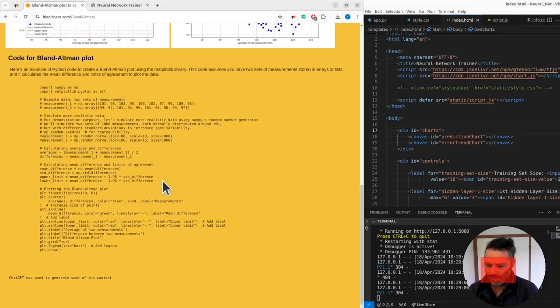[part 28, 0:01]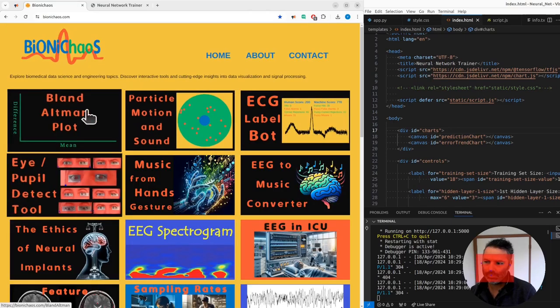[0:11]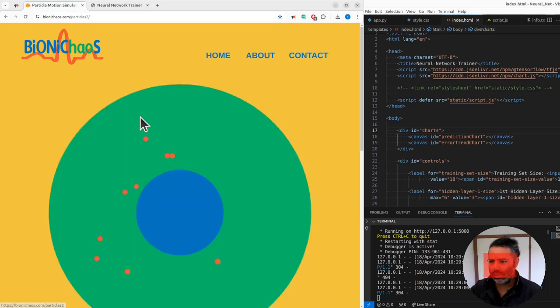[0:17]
Hey, the most recent tool was another tool, a blog, this Bland-Altman plot. By the way, full disclaimer, this was created by ChatGPT. There will be videos on the YouTube channels of me generating this text. This motion particle I haven't touched in a while. This is just to relax.
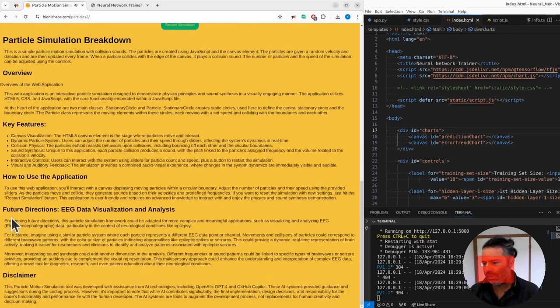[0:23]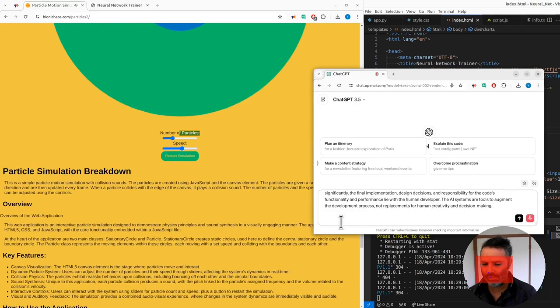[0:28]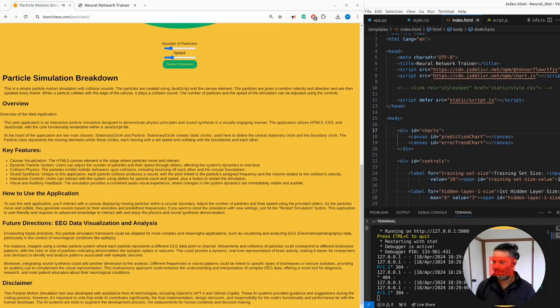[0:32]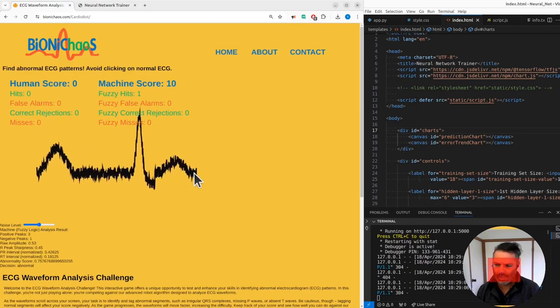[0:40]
But yes, there's actually a future direction of this one. Can you regenerate the same text? It's not just copying it, it's changing it. The reason I'm doing it is because I want that text to speech. This is one of the main applications that we have.
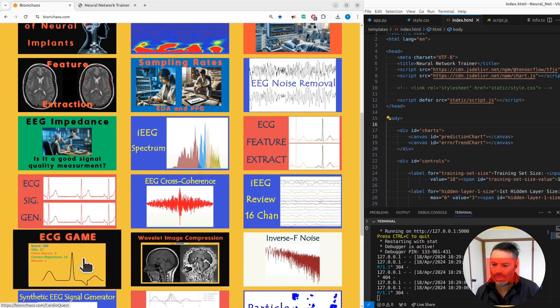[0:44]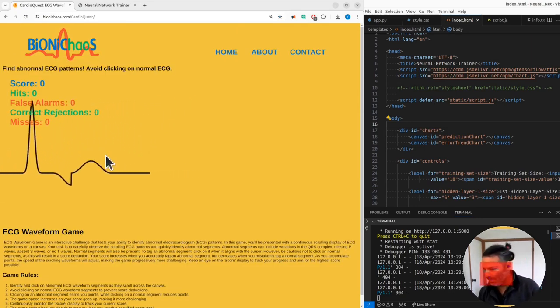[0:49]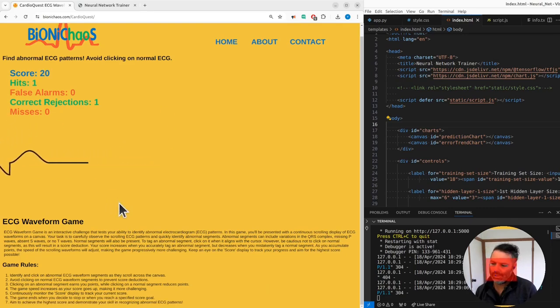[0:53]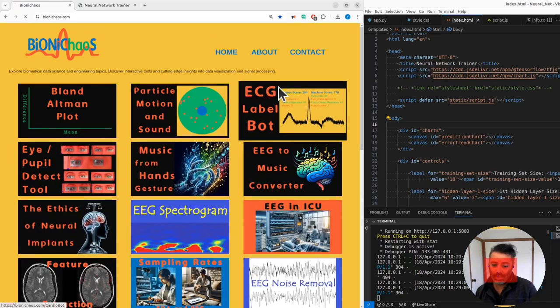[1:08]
And yes, there was a similar tool published a while back. That one didn't have the robot option, it would just be playing against yourself. So I don't know if we should get rid of it. Let me know what you think. I think it's fulfilling a different function there. The new one is significantly different.
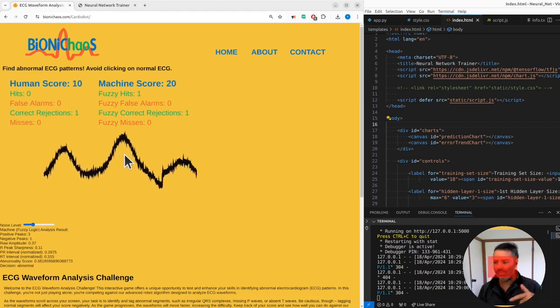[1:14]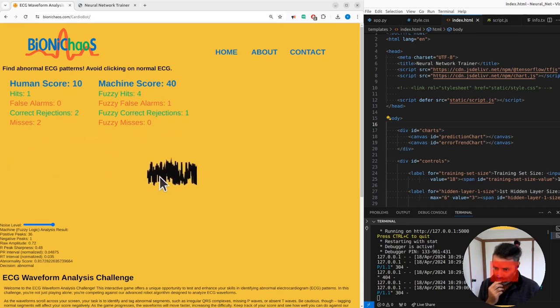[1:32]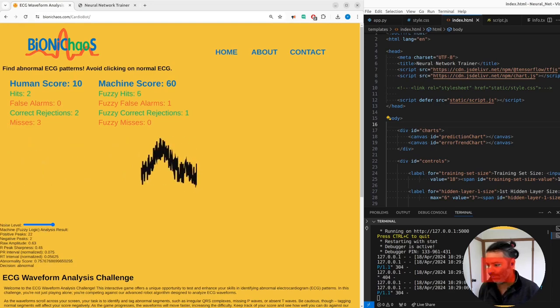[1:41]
First, you can add the noise to the mix. It's happening between waveforms, not within the same waveform. So when you adjust this, it will only affect the next incoming wave, like this. That looks abnormal. Yeah, the robot in this case should be starting to make mistakes. Yeah, it got one false alarm there, when the noise is at the maximum.
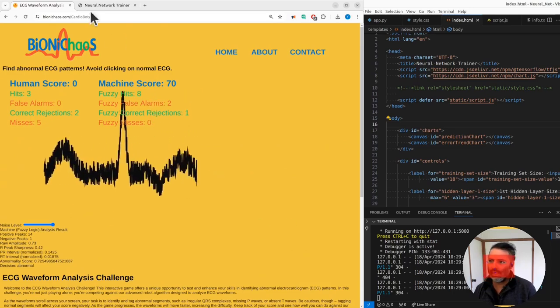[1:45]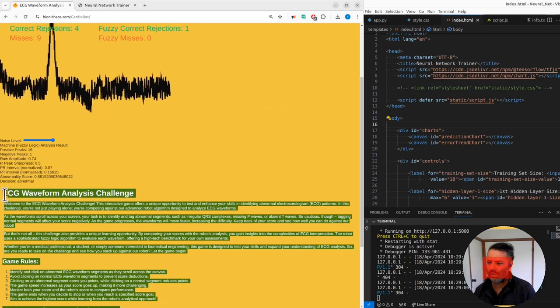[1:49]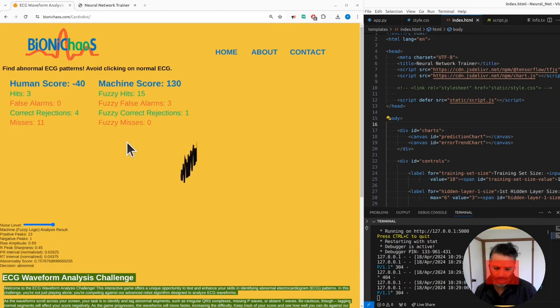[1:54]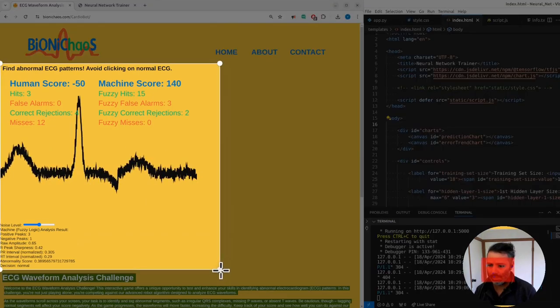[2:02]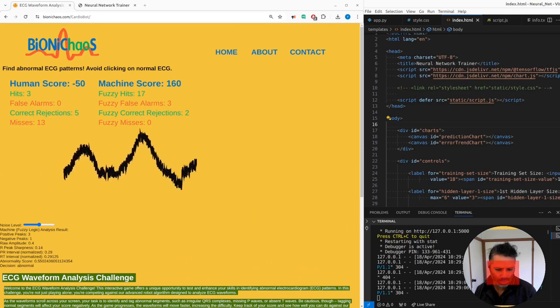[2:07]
Okay, so let me know if you try this out, and what you think about it. We can get GPT-4 potentially giving a different perspective on this. Also, the fact that the machine is always winning against the human, that's not nice, is it? Pop an image into GPT-4 in the description, and come up with some new ideas to improve it.
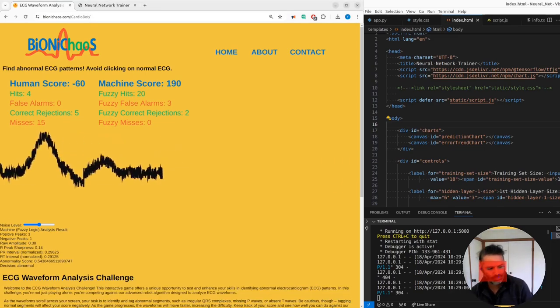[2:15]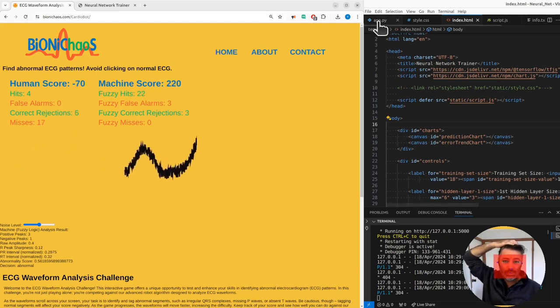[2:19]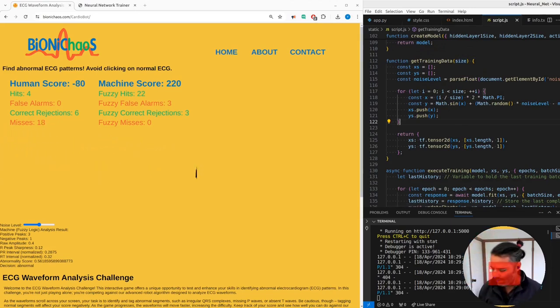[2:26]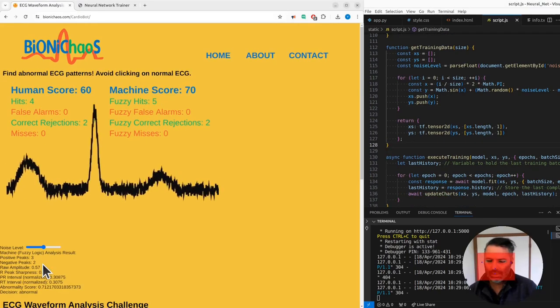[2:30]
It's generating fairly slowly today. The bot is a bit lazy. Start developing in a second. We have this other application, a neural network example thing that we will be trying to develop. Okay, that's a pretty generic description.
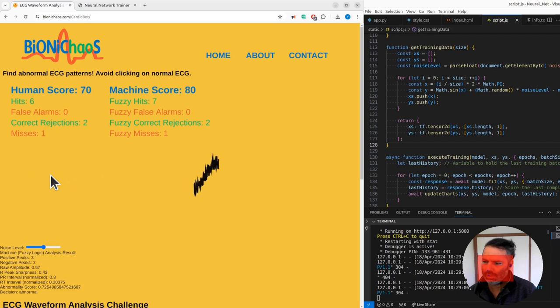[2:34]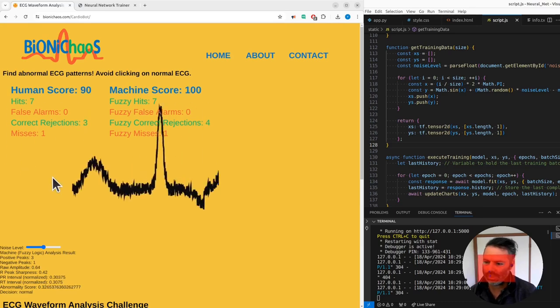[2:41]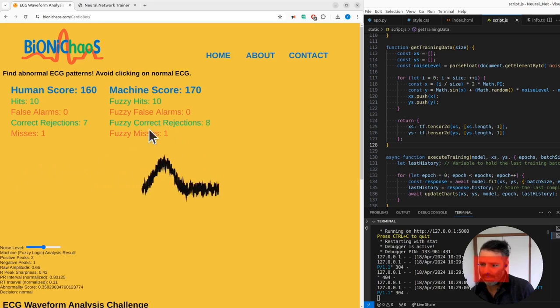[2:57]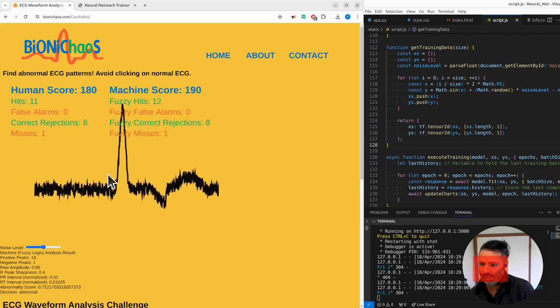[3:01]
Do I get a higher score than a human? I am human, am I? I don't know anymore. I thought for a second there I had a higher score than the machine. But yes, if you rely on the machine, it had one miss. I don't know why, I have to check its algorithm. That's probably when I did the beta, when I didn't do the miss. The machine did. Now we have the same score. I think I missed something else, actually, not the same waveform.
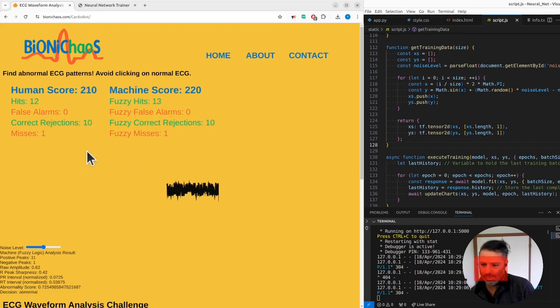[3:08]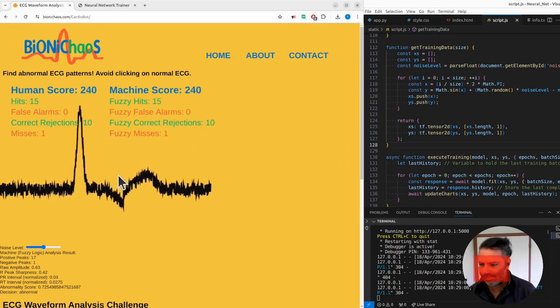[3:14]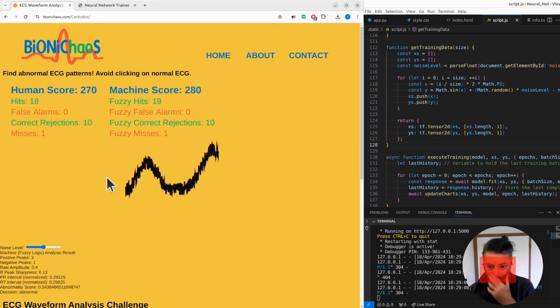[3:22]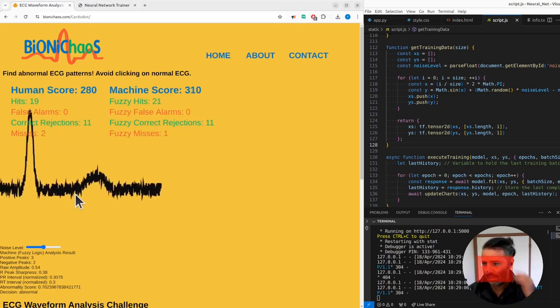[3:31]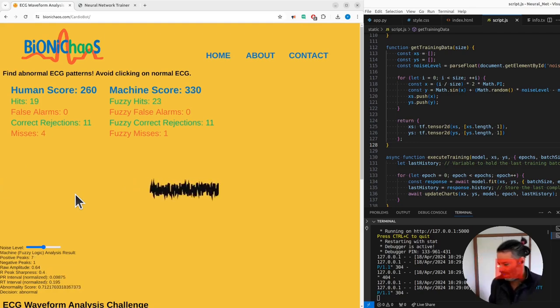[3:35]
Ooh, now it's becoming a bit faster. I think there is a video of me reaching about 1,000 points and it becomes crazy fast. So let me know if you tried this and what score you reached. There is currently no leaderboard or anything like that, just self-reporting. This is also why I'm doing these sessions, so I can get feedback on this stuff.
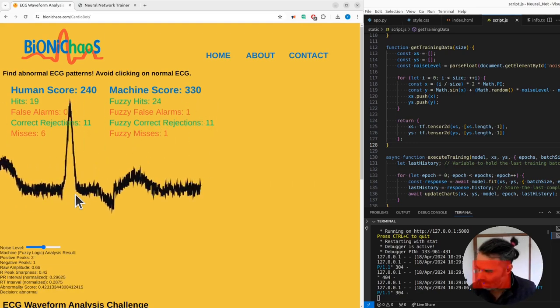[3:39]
And no, I don't have a CEO or anyone whispering in my ear. It's just me trying to check the sound.
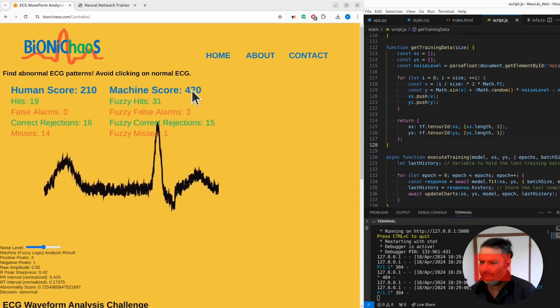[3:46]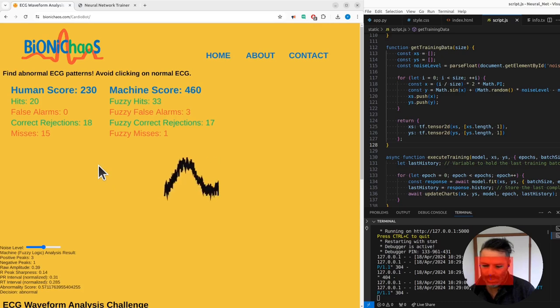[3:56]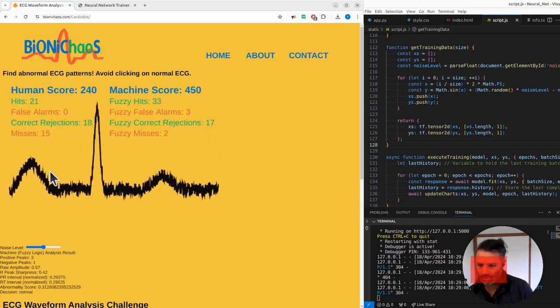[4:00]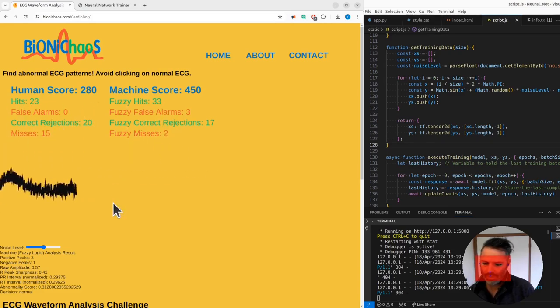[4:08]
The bot already has double the points. Well, because humans are really good at getting distracted. I wasn't paying attention to the waveforms. And if this was real data, the patient would have been misdiagnosed or underdiagnosed, not diagnosed correctly. Well, I'm not a clinician, so that hypothetical patient is very lucky. But I'm pretty sure even the best clinicians get distracted as well. So this is something that can help a lot.
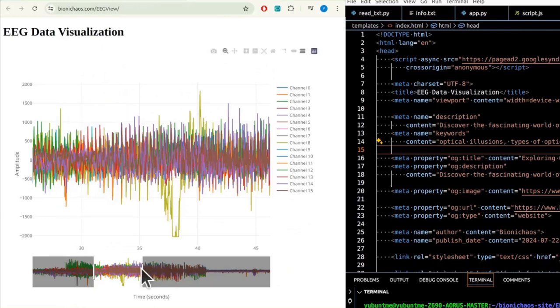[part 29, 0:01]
The EEG Data Plot web application is a powerful tool for visualizing and analyzing EEG data. By combining the strengths of Flask and Plotly, it offers a seamless and interactive user experience. Whether you are a researcher, clinician, or student, this application provides an intuitive way to explore brain activity and gain insights from EEG recordings. We hope you find this tool useful for your EEG data analysis needs.
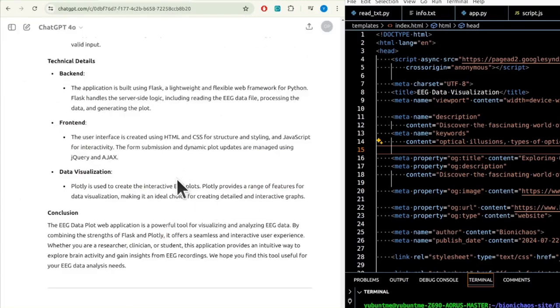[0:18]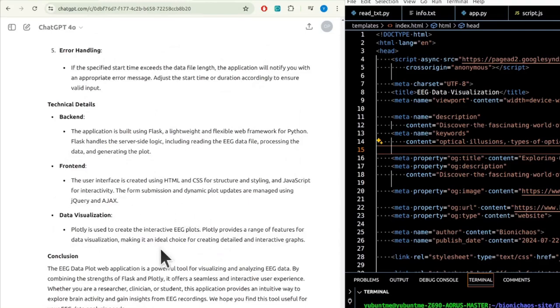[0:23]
I'm only saying it's not my voice. Well, it kind of is, because I'm prompting this thing. But surely the robot voice is much nicer than my own.
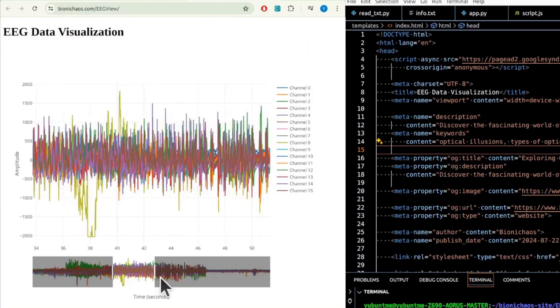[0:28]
The data set that I'm reviewing here is real EEG. It's from a subject. Yeah, if we're talking about ethics, well, there's more pressing issues than just identifying or de-identifying subjects. In this case, their identity is really not an issue. The issue is who the subjects are.
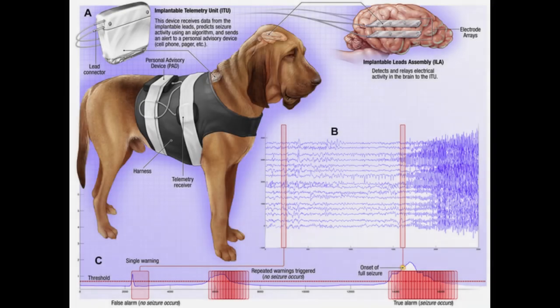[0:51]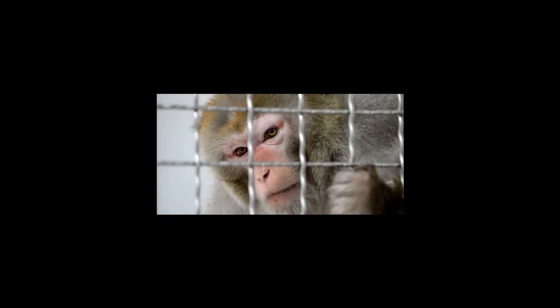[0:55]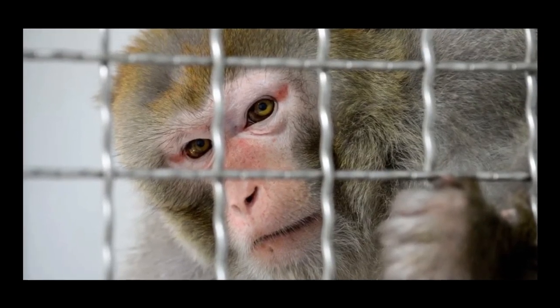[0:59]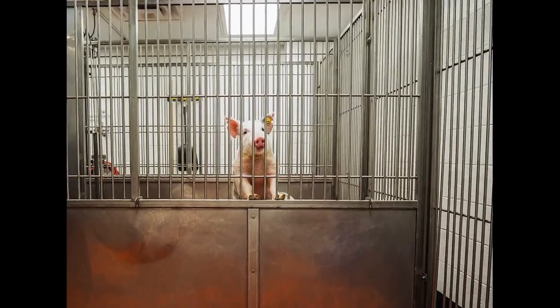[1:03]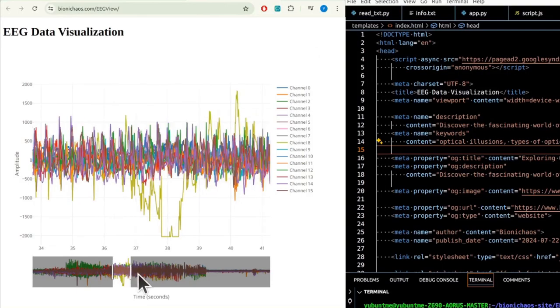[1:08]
Let's put it this way. They are non-human. So there's a whole can of worms there that makes it easy in terms of identification of data privacy and the like. It's not a problem anymore, is it? But then there's more pressing ethical concerns about using animal subjects in research. But the study was already done, so the data is there. We might as well use it.
I'm having a technical issue with this data, which is that there's too much loaded on the screen, even though that data file is actually small. Yeah, we need to essentially downsample when displayed on the screen like that, and we'll be looking at that next.
Well, the good thing about it, it's not running on my server anymore, so when you actually go to this link, this will be running in your browser, so you'll be paying for electricity for a change. Those are epileptic spikes, actual seizures.
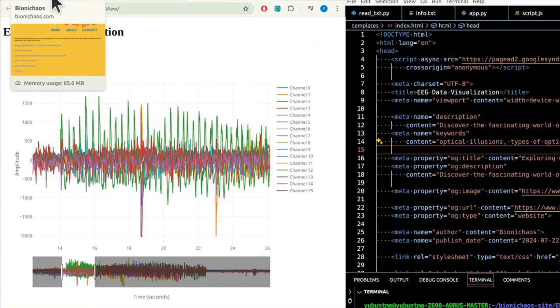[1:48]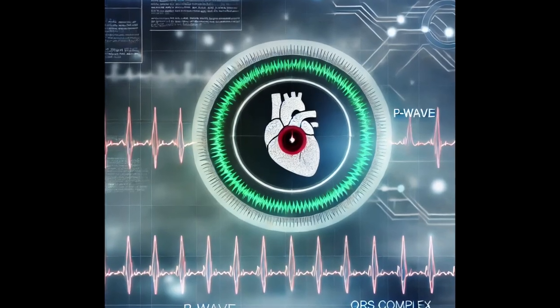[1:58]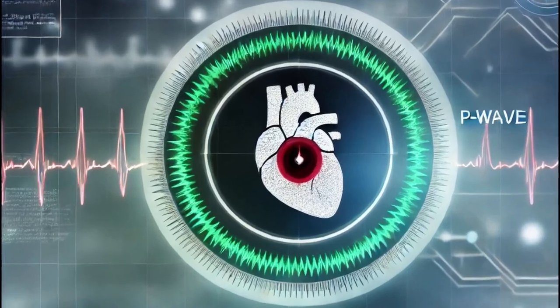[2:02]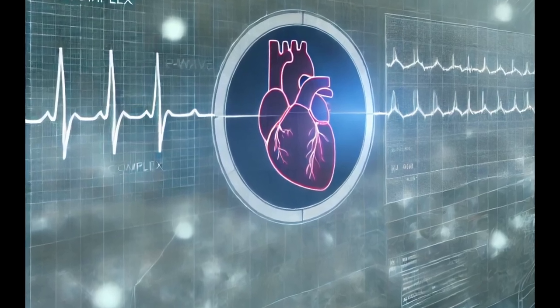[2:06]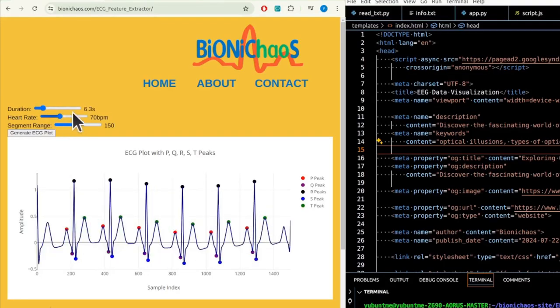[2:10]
And yeah, normally with epilepsy, ECG is being recorded at the same time. So most datasets will also have at least one channel of ECG, if not more, included in the dataset. And yes, you can identify a subject based on, if they have a mild heart condition, their subject could be identified. So yeah, the good thing about those, it's all synthetic data, so there's no ethical concerns.
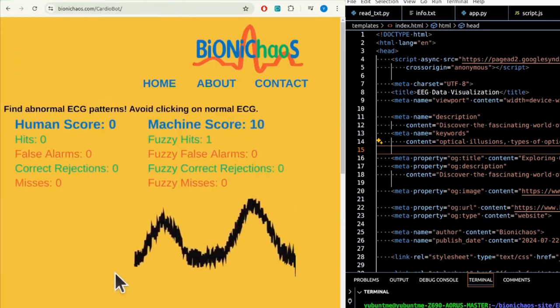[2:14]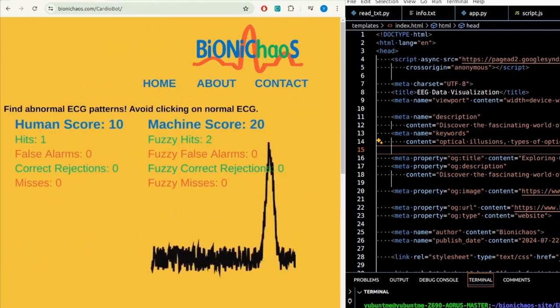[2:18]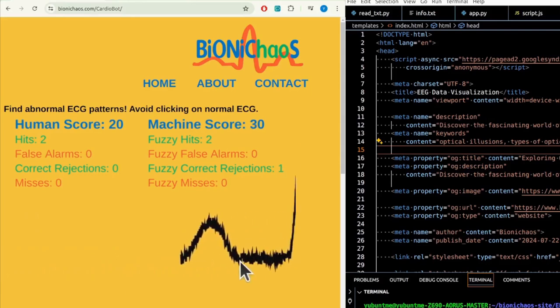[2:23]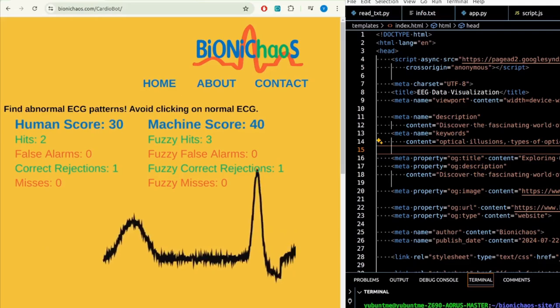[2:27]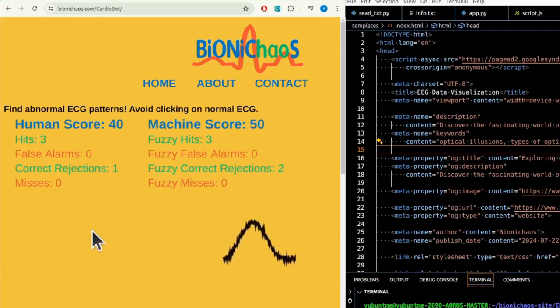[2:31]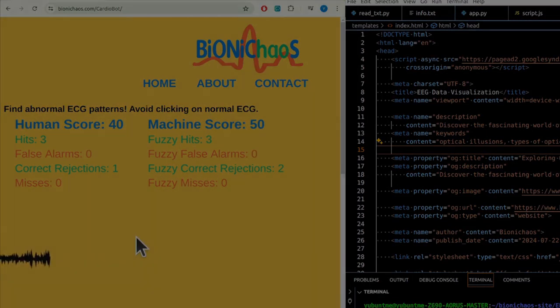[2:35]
This one actually looks more realistic. It's still synthetic, there's just noise added to it. Those are actual ECG waveforms, not from any living subject. But hopefully, if you are a clinician, do let me know if they look realistic to you or not. Because if not, we need to improve it.
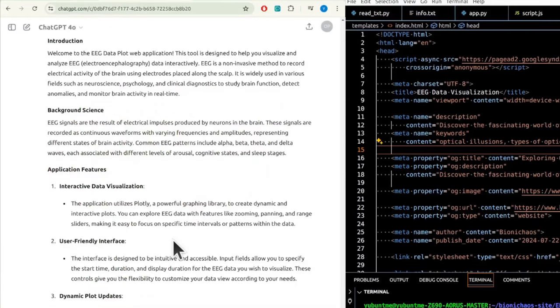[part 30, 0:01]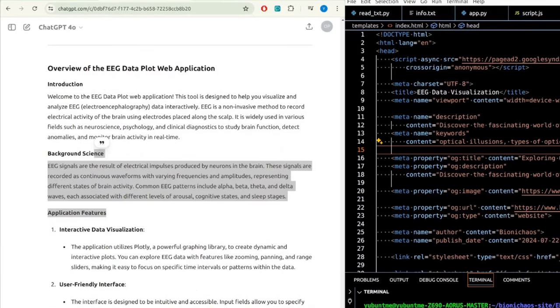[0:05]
Full disclaimer, we're using ChatGPT for pretty much anything and everything. And let's see how ChatGPT can deal with that. So now we're doing primarily most of the stuff in JavaScript, so front end, so meaning on your browser.
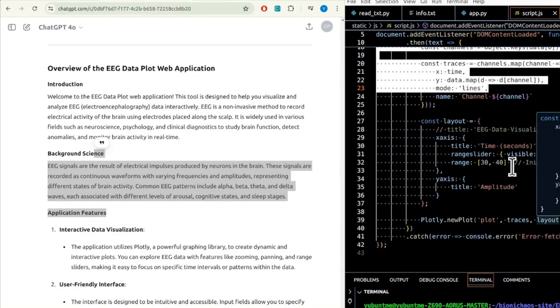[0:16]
It's not doing much at the moment, but someone also said that apparently prompting ChatGPT costs the equivalent of a bottle of water. That is not true. Charging you a fraction of a cent to prompt, well, it probably costs them almost nothing and they're still making money. So, but yes, maybe for training.
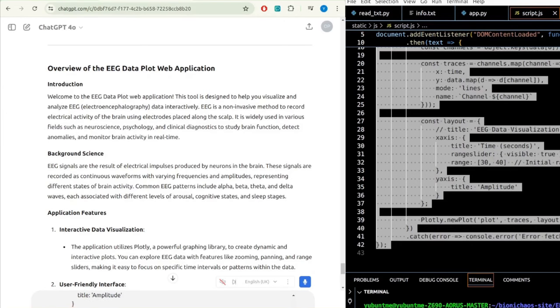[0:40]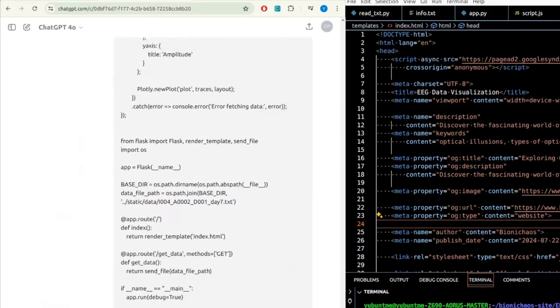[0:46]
Before I totally lose my voice, because when I talk to the robot, it also sounds like I'm the robot, not because you have to talk like this for the transcription to work well.
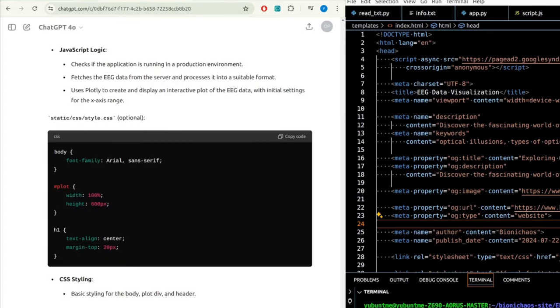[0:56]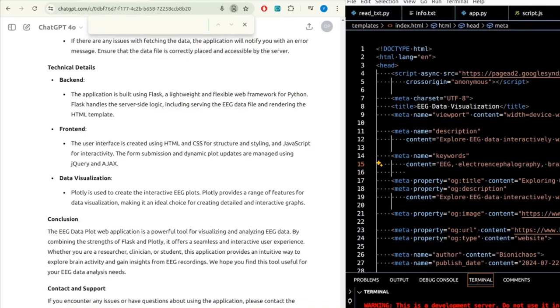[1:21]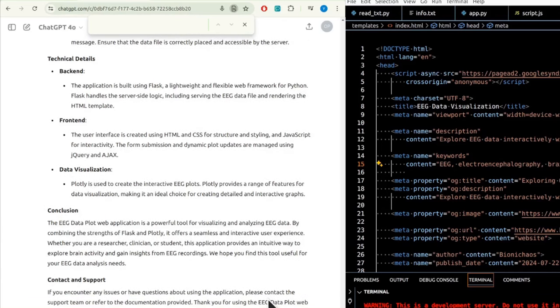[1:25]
Welcome to the EEG Data Plot web application. This tool allows you to visualize EEG, electroencephalography data, interactively. EEG is a technique used to record electrical activity of the brain through electrodes placed along the scalp. It is an essential tool in neuroscience, psychology, and clinical diagnostics, used for studying brain function, detecting anomalies, and monitoring brain activity in real time. The current data that we are showing in this tool has an epileptic seizure in it.
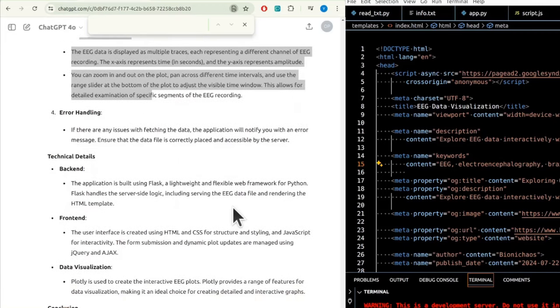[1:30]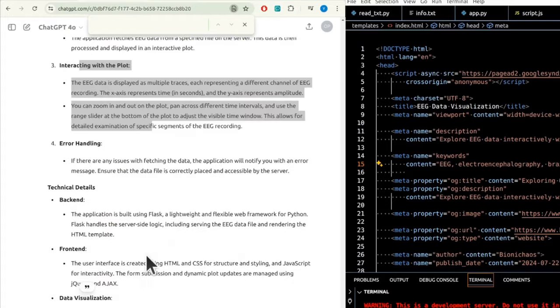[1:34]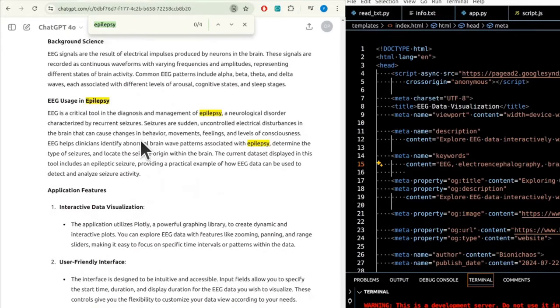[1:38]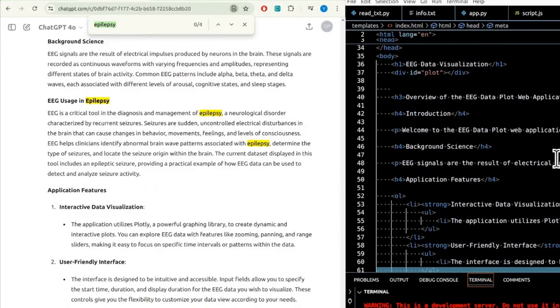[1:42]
Not sure why it is rewriting the whole thing, but okay, didn't expect that. Actually include, yeah, just added this one paragraph. So everything else is the same, is it?
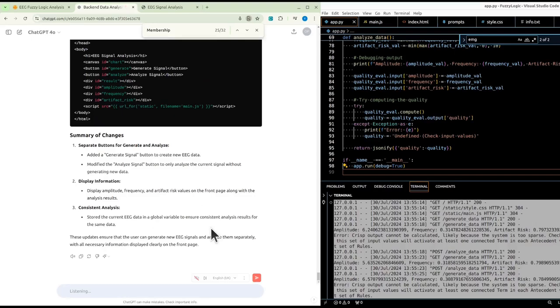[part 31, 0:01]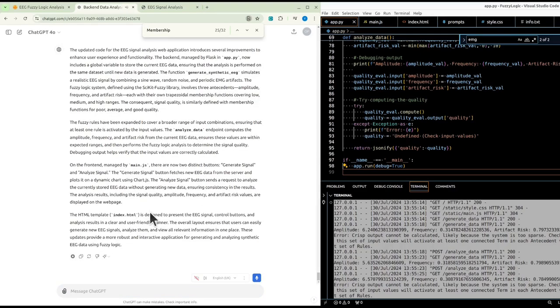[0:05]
Okay, can you give a summary for the code? The updated code for the EEG signal analysis web application introduces several improvements to enhance user experience and functionality.
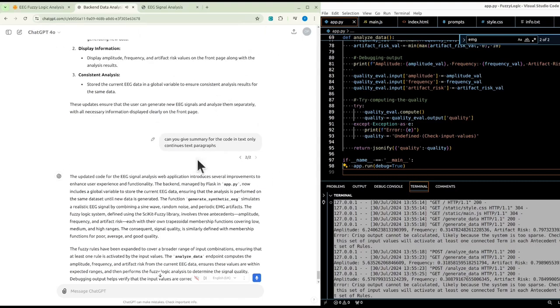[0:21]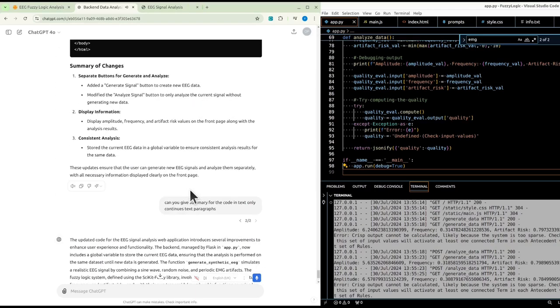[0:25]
The backend, managed by Flask and app.py, now includes a global variable to store the current EEG data, ensuring that the analysis is performed on the same dataset until new data is generated. The function Generate Synthetic EEG simulates a realistic EEG signal by combining a sine wave, random noise, and periodic EMG
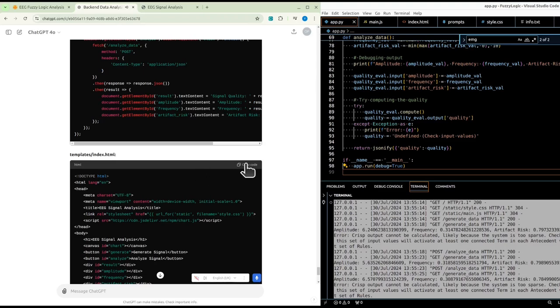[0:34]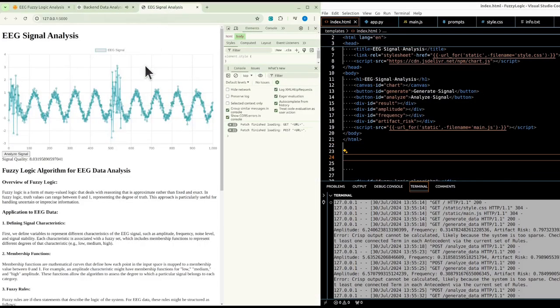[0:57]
artifacts. The fuzzy logic system, defined using the scikit-fuzzy library, involves three antecedents: amplitude, frequency, and artifact risk, each with their own trapezoidal membership functions covering low, medium, and high ranges. The consequent signal quality is similarly defined with membership functions for poor, average, and good quality. The fuzzy rules have been expanded to cover a broader range of input combinations, ensuring that at least one rule is activated by the input values.
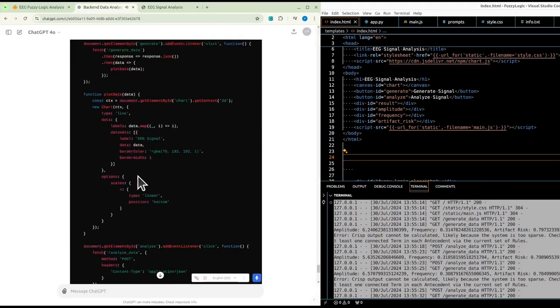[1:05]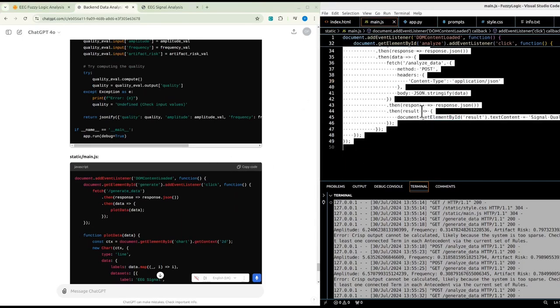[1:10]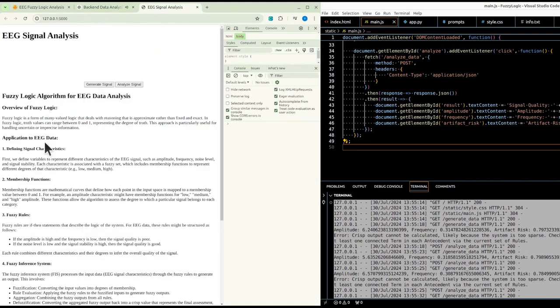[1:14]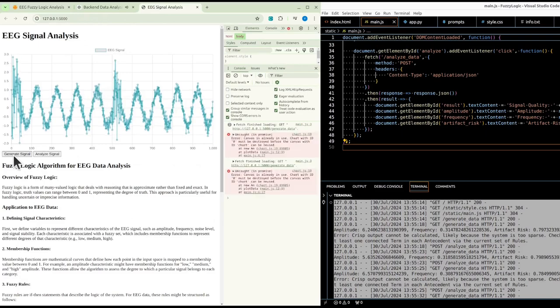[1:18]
The analyze data endpoint computes the amplitude, frequency, and artifact risk from the current EEG data, ensures these values are within expected ranges, and then performs the fuzzy logic analysis to determine the signal quality. Debugging output helps verify that the input values are correctly calculated.
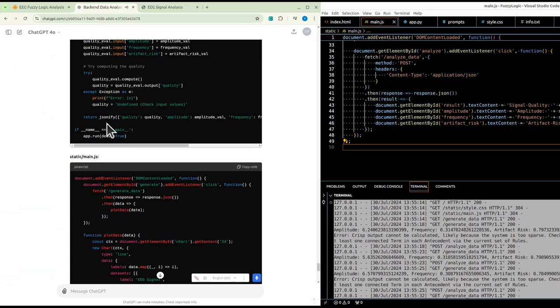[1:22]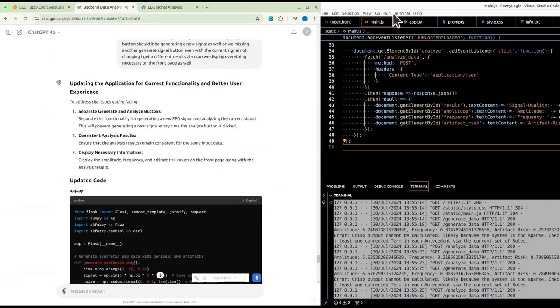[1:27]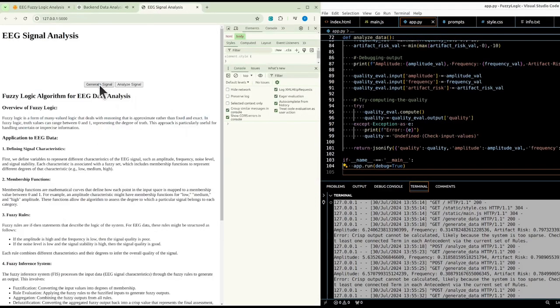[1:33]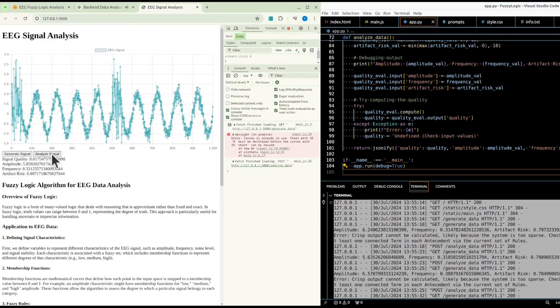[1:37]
On the front end, managed by main.js, there are now two distinct buttons: Generate Signal and Analyze Signal. The Generate Signal button fetches new EEG data from the server and plots it on a dynamic chart using Chart.js. The Analyze Signal button sends a request to analyze the currently stored EEG data without generating new data, ensuring consistency in the results.
The analysis results, including the signal quality, amplitude, frequency, and artifact risk values, are displayed on the web page. The HTML template, index.html, is designed to present the EEG signal, control buttons, and analysis results in a clear and user-friendly manner. The overall layout ensures that users can easily generate new EEG signals, analyze them, and view all relevant information in one place. These updates provide a more robust and interactive application for generating and analyzing synthetic EEG data using fuzzy logic.
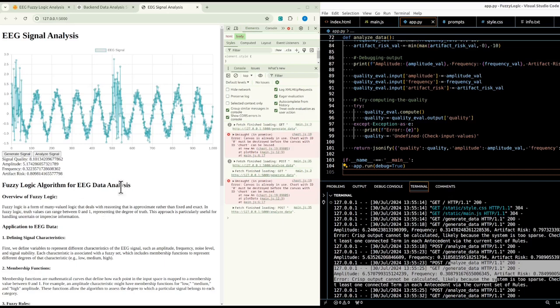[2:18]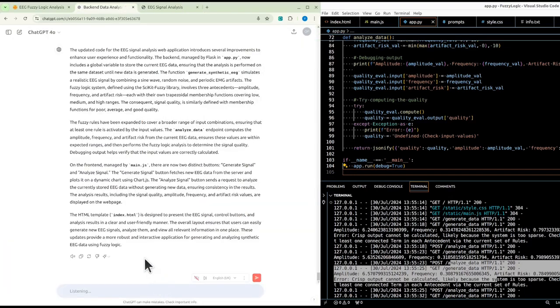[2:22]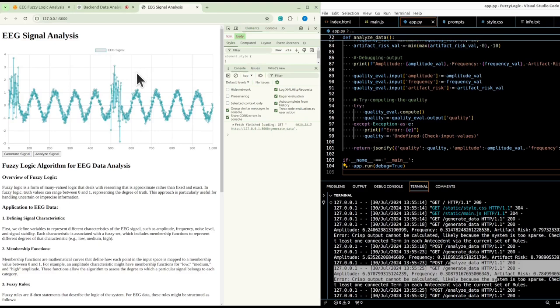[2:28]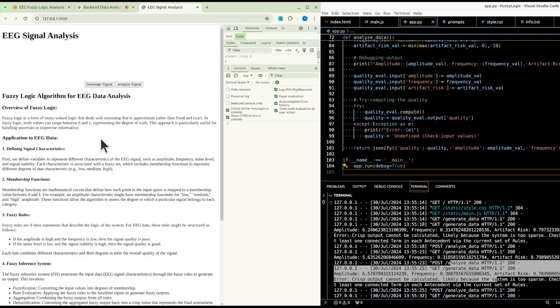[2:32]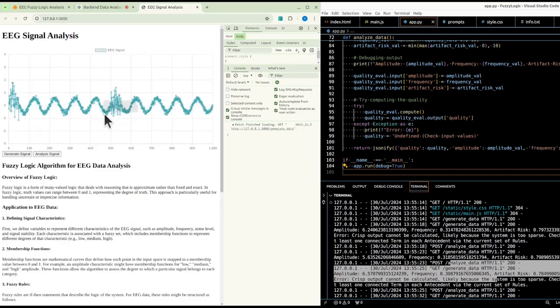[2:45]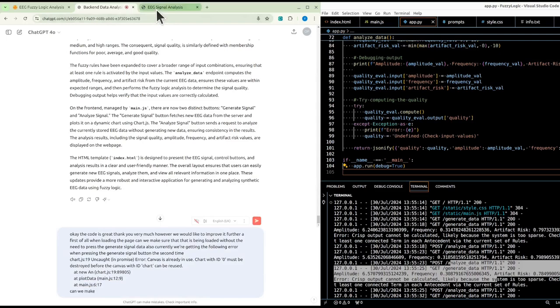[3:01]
Yes, so we're having a couple of problems. Okay, the code is great. Thank you very much. However, we would like to improve it further. First of all, when loading the page, can we make sure that the data is being loaded without the need to press the generate signal button? Also, currently we're getting the following error when pressing the generate signal button the second time. Can we make sure we address that?
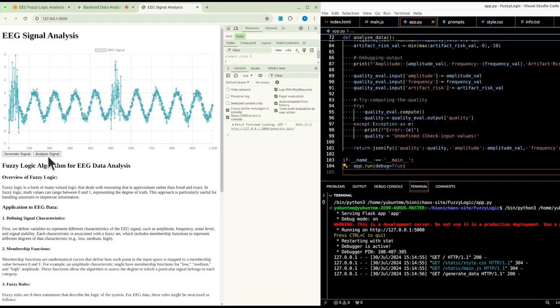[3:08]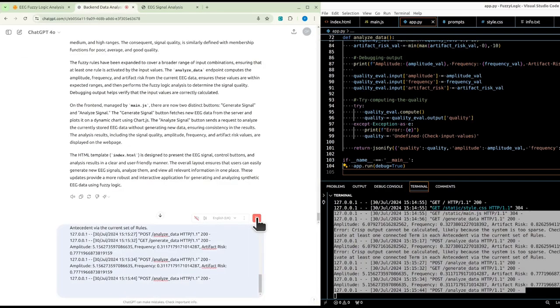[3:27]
Also, can we make sure that when loading the page, the EEG signal is being shown, so the generate signal button is being automatically pressed for us, and also the analyze signal button is pressed, so we actually see the result. Also, it seems that sometimes we're still getting the crisp output cannot be calculated error. This is likely because the system is too sparse. Can we address this as well?
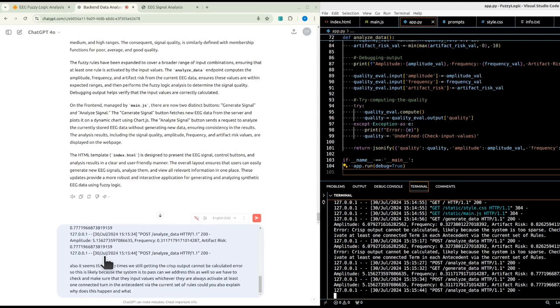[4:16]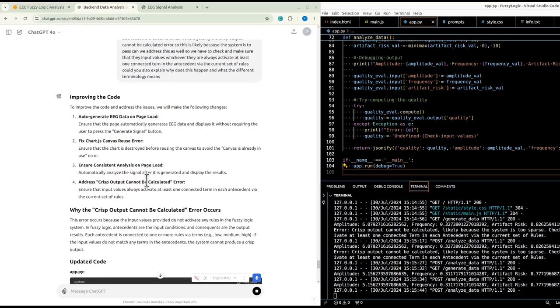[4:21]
So we have to check and make sure that the input values, whichever they are, always activate at least one connected term in the antecedent via the current set of rules. Could you also explain why this happens and what the different terminology means? We have the explanation for it.
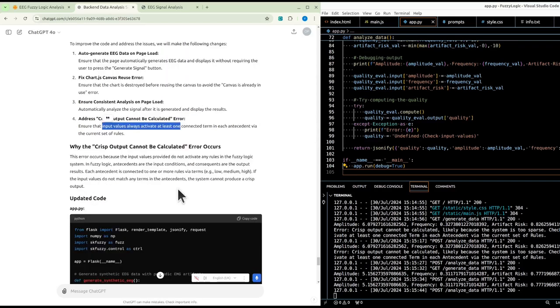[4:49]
Okay, so we're auto-generating the EEG data on page load, fixing the Chart.js canvas reuse error. That should be straightforward. We automatically analyze the signal after it's generated and display the results. So that should all happen when loading the page. And to ensure that the input values always activate at least one connected term: this error occurs because the input values provided do not activate any rules in the fuzzy logic system.
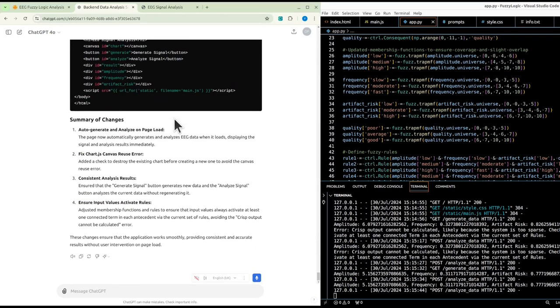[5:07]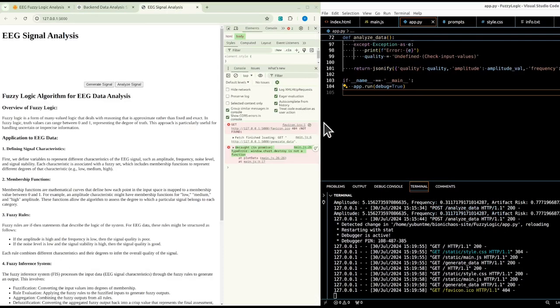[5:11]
Yeah, so essentially these values, which we actually want to display. So we'll be getting into it quite in depth shortly. Yeah, we're having an error. One of the functions might use Copilot for it.
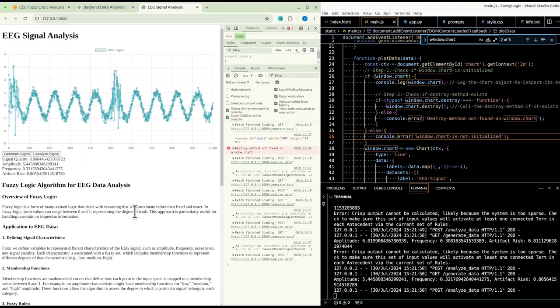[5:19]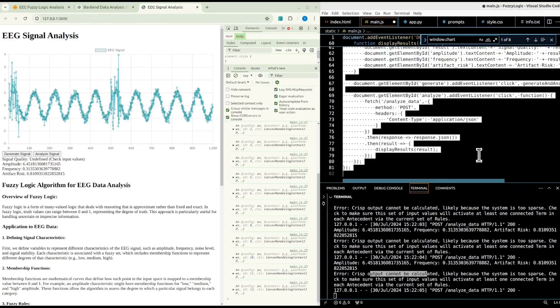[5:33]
Okay, so we're still getting errors, but it is working. Okay, we're still getting the crisp output cannot be calculated error. We need more details. Let's actually go back to using ChatGPT.
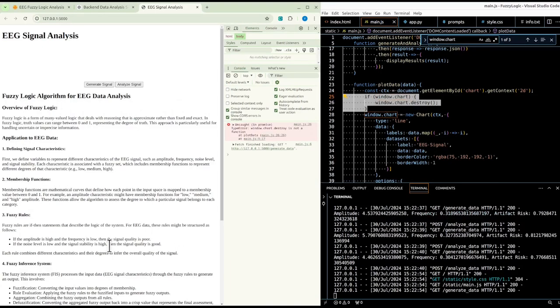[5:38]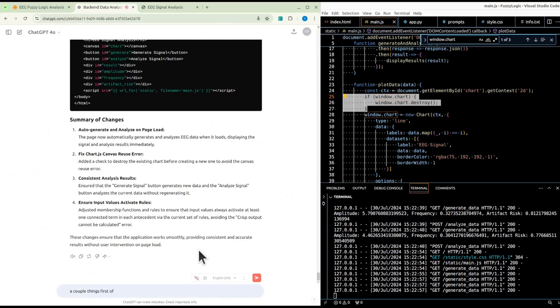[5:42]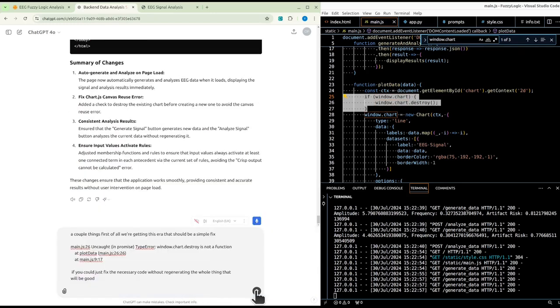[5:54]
Yeah, we had that in the original code. A couple things. First of all, we're getting this error. That should be a simple fix. If you could just fix the necessary code without regenerating the whole thing, that will be good. Yeah, just go one by one. Just do one thing at a time.
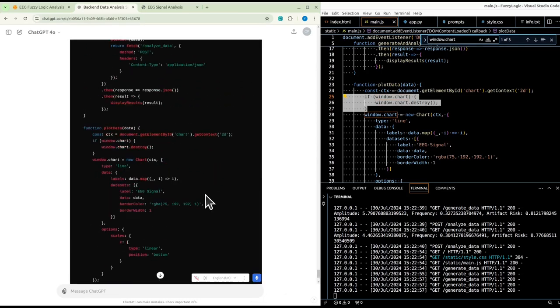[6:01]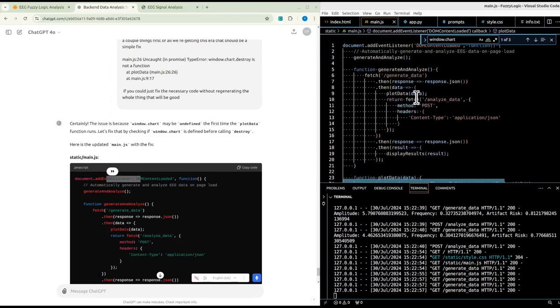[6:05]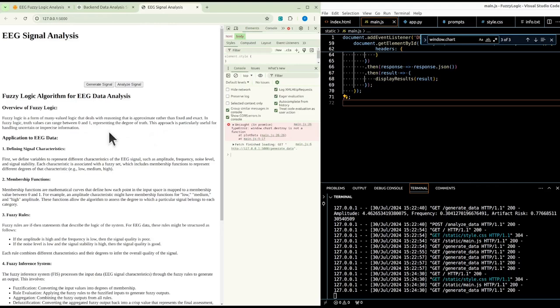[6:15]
Updating the main.js is just the function. Oh, currently we have 71 lines of code. It's remained the same. Okay, now we're getting into the same error vortex. Might need more details, isn't it?
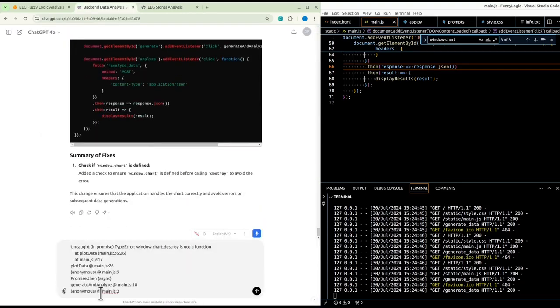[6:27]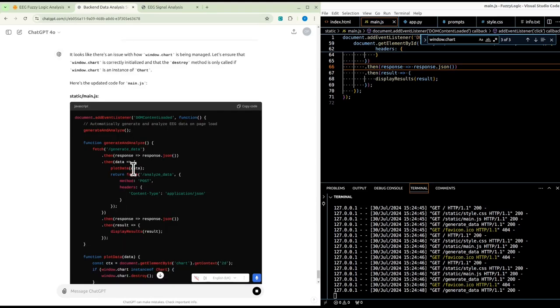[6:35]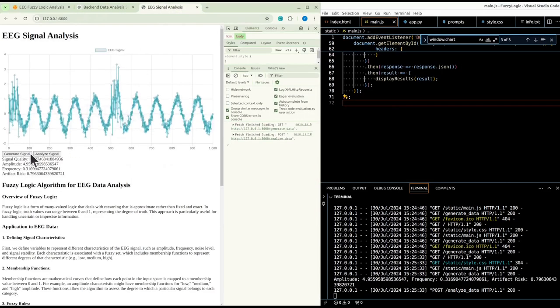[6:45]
Oops. It's still getting the same error. Can you fix this for us? Probably the order of things or something. We still have 71 lines of code. Right. Well, now it's working better.
So every time it will give you a slightly different signal, which is great. It will analyze the signal. So we don't actually need the analyze signal button, do we? Give us a signal quality metric. It will look at the amplitude. Right. I'm still getting this
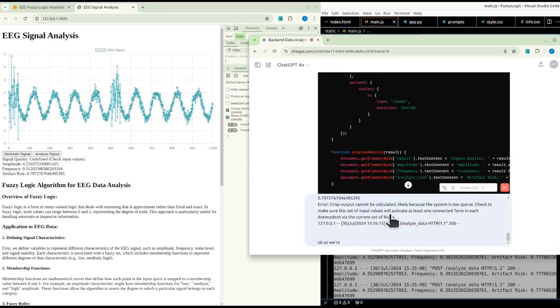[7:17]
undefined stuff. Okay, so we still seem to be getting the crisp output cannot be calculated error. We would like to dive deep into it. So, well, eventually we want to fix it, but we really want to understand why is this happening. If you could just provide text, full sentences, whole paragraphs, explanation, that would be great.
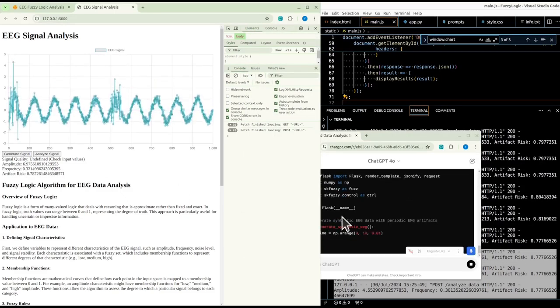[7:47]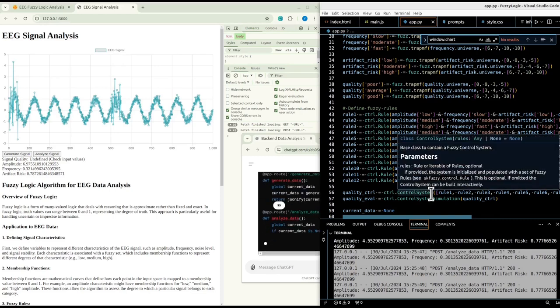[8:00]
Well, it's definitely better from what we had before. It's updating the code again. It's adding more rules. No, there are 12 rules already. What? Okay, we have to go over these rules.
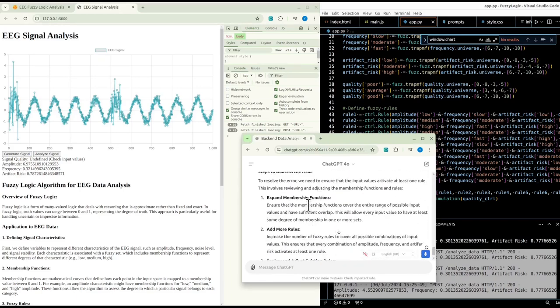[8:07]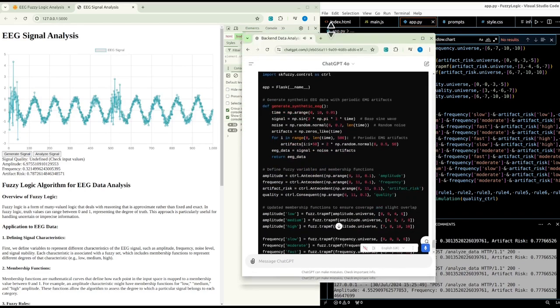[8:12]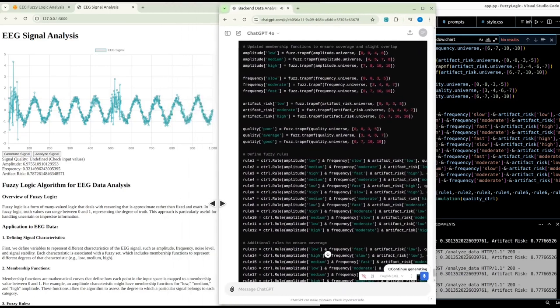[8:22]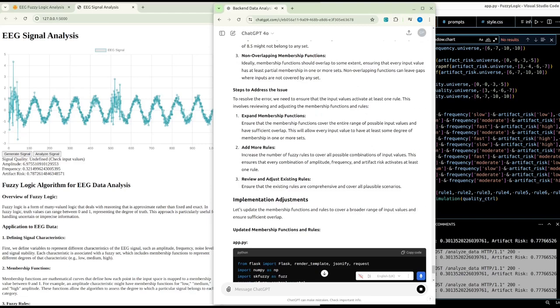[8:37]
Understanding the crisp output cannot be calculated error in fuzzy logic. The error, crisp output cannot be calculated, likely because the system is too sparse, occurs when the fuzzy logic system fails to produce a definitive result. This issue is typically rooted in the configuration of the fuzzy rules and membership functions within the fuzzy inference system. To understand why this happens, let's delve into the key components and mechanics of fuzzy logic systems. Fuzzy logic system components. 1. Antecedents, input variables. These are the input conditions or variables.
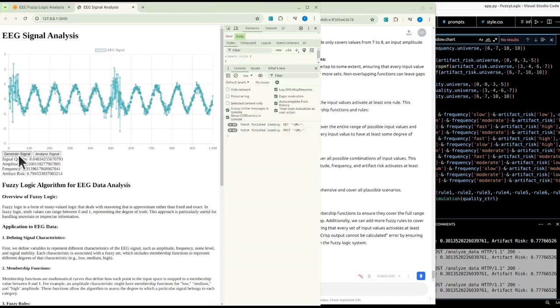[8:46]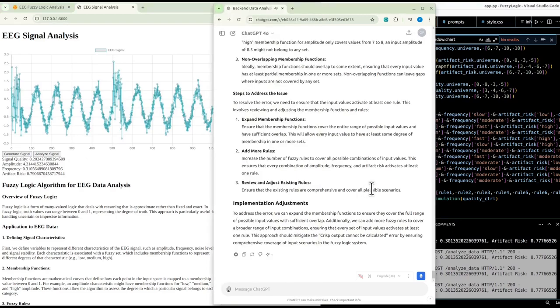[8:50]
Fuzzy logic system components. 1. Antecedents, input variables. These are the input conditions or variables, such as amplitude, frequency, and artifact risk in our case. Each antecedent has membership functions that define how different ranges of input values map to linguistic terms like low, medium, and high. 2. Consequents, output variables. These are the outputs of the fuzzy logic system. In our case, the consequent is the signal quality, with linguistic terms like poor, average, and good.
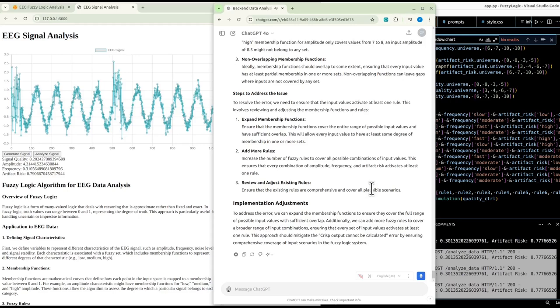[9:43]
3. Membership functions. These functions define the degree to which a particular input belongs to a fuzzy set. For instance, an amplitude value might partially belong to both medium and high sets, each with a certain degree of membership. 4. Fuzzy rules. These are the if-then statements that define the relationships between antecedents and consequence. A rule might look like, if amplitude is high and frequency is fast, then signal quality is poor.
How the error occurs. The crisp output cannot be calculated error occurs when the input values do not activate any rules in the fuzzy logic system. This means that the input values fail to meet the conditions specified in any of the fuzzy rules, leading to a situation where the system cannot determine a definitive output. Several factors can contribute to this issue. 1. Sparse rule set. If the fuzzy rules do not cover the entire range of possible input values, there will be gaps where no rules apply.
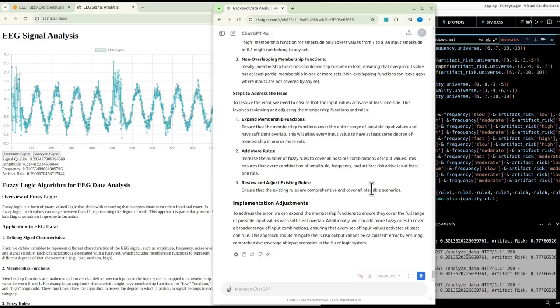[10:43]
For example, if there are no rules to handle a combination of medium amplitude, moderate frequency, and moderate artifact risk, inputs in this range will not activate any rules. 2. Narrow membership functions. If the membership functions are too narrowly defined, many input values may fall outside the defined ranges, resulting in zero membership degrees for those inputs. For instance, if the high membership function for amplitude only covers values from 7 to 8, an input amplitude of 8.5 might not belong to any set.
3. Non-overlapping membership functions. Ideally, membership functions should overlap to some extent, ensuring that every input value has at least partial membership in one or more sets. Non-overlapping functions can leave gaps where inputs are not covered by any set. Steps to address the issue. To resolve the error, we need to ensure that the input values activate at least one rule. This involves reviewing and adjusting the membership functions and rules.
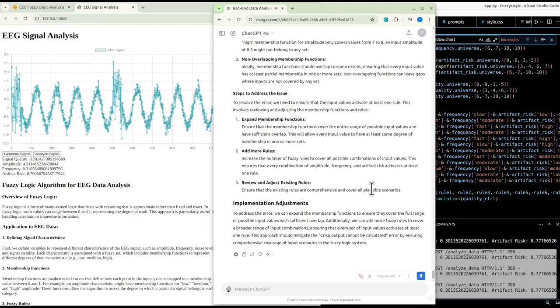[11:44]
1. Expand membership functions. Ensure that the membership functions cover the entire range of possible input values and have sufficient overlap. This will allow every input value to have at least some degree of membership in one or more sets. 2. Add more rules. Increase the number of fuzzy rules to cover all possible combinations of input values.
This ensures that every combination of amplitude, frequency, and artifact risk activates at least one rule. 3. Review and adjust existing rules. Ensure that the existing rules are comprehensive and cover all plausible scenarios.
Implementation adjustments. To address the error, we can expand the membership functions to ensure they cover the full range of possible input values with sufficient overlap. Additionally, we can add more fuzzy rules to cover a broader range of input combinations, ensuring that every set of input values activates at least one rule. This approach should mitigate the "crisp output cannot be calculated" error by ensuring comprehensive coverage of input scenarios in the
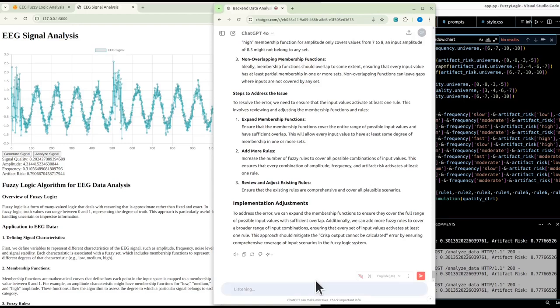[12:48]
fuzzy logic system. In text alone, can you explain how we can visually review the existing rules? We would generally like to visualize as much as possible in the front panel.
Visualizing fuzzy logic rules and membership functions. Visualizing the existing fuzzy logic rules and membership functions can greatly aid in understanding how the system processes input values and why certain errors, like "crisp output cannot be calculated," occur. Here's a step-by-step guide on how to visualize these components on the front panel of your web application.
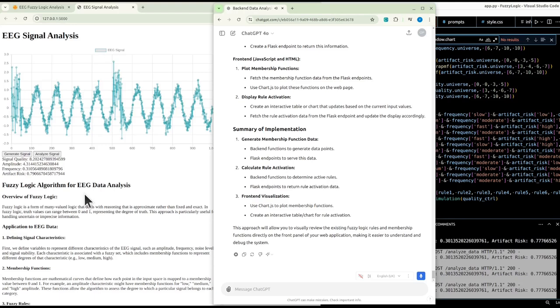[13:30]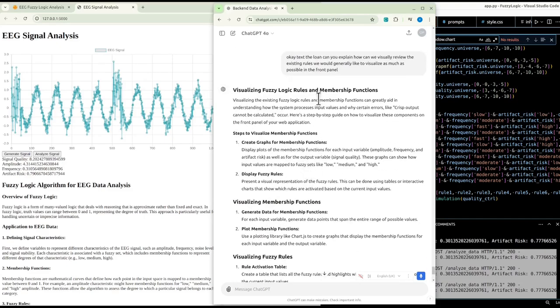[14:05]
Steps to visualize membership functions. 1. Create graphs for membership functions. Display plots of the membership functions for each input variable, amplitude, frequency, and artifact risk, as well as for the output variable, signal quality. These graphs can show how input values are mapped to fuzzy sets like low, medium, and high. 2. Display fuzzy rules. Present a visual representation of the fuzzy rules. This can be done using tables or interactive charts that show which rules are activated based on the current input values.
Visualizing membership functions. 1. Generate data for membership functions. For each input variable, generate data points that span the entire range of possible values. 2. Plot membership functions. Use a plotting library like Chart.js to create graphs that display the membership functions for each input variable and the output variable.
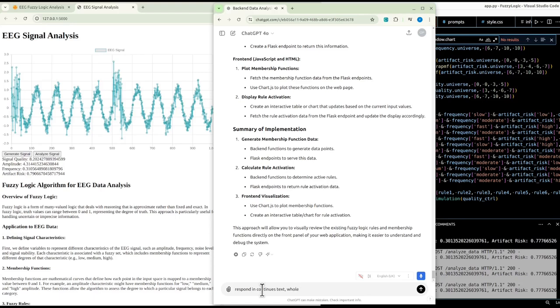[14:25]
Visualizing fuzzy rules. 1. Rule activation table. Create a table that lists all the fuzzy rules and highlights which rules are activated based on the current input values. 2. Interactive rule viewer. Develop an interactive viewer that allows users to see which rules are active by adjusting input values dynamically.
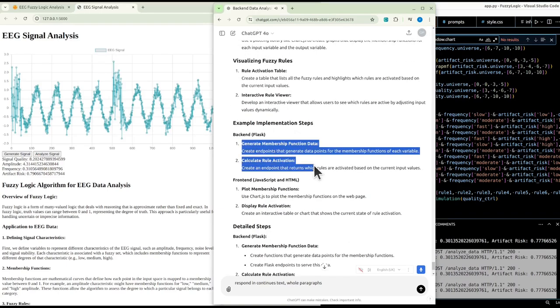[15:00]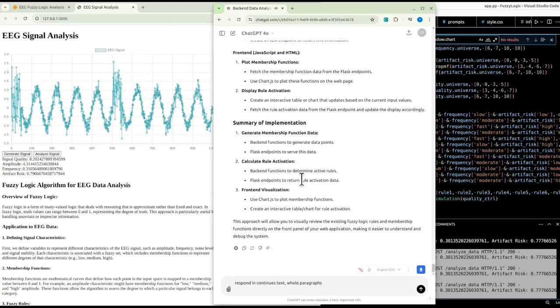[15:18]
Example implementation steps. Backend, Flask. 1. Generate membership function data. Create endpoints that generate data points for the membership functions of each variable. 2. Calculate rule activation. Create an endpoint that returns which rules are activated based on the current input values. Frontend, JavaScript and HTML. 1. Plot membership functions. Use Chart.js to plot the membership functions on the web page. 2. Display rule activation. Create an interactive table or chart that shows the current state of rule activation.
Detailed steps. Backend, Flask. 1. Generate membership function data. Create functions that generate data points for the membership functions. Create Flask endpoints to serve this data. 2. Calculate rule activation. Create a function that checks which rules are activated based on given input values. Create a Flask endpoint to return this information.
Frontend, JavaScript and HTML. 1. Plot membership functions. Fetch the membership function data from the Flask endpoints. Use Chart.js to plot these functions on the web page. 2. Display rule activation. Create an interactive table or chart that updates based on the current input values. Fetch the rule activation data from the Flask endpoint and update the display accordingly.
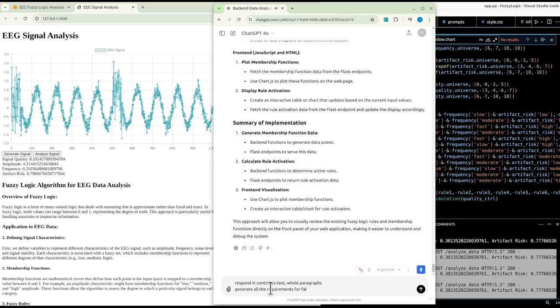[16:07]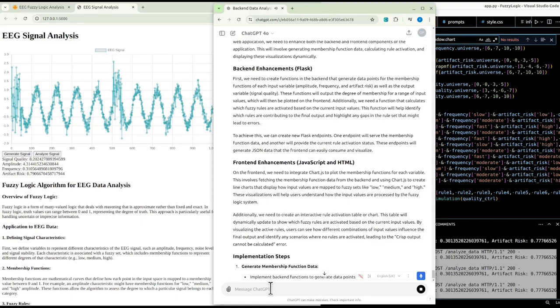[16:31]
Summary of implementation. 1. Generate membership function data. Backend functions to generate data points. Flask endpoints to serve this data. 2. Calculate rule activation. Backend functions to determine active rules. Flask endpoints to return rule activation data. 3. Frontend visualization. Use Chart.js to plot membership functions. Create an interactive table or chart for rule activation. This approach will allow you to visually review the existing fuzzy logic rules and membership functions directly on the front panel of your web application, making it easier to understand and debug the system.
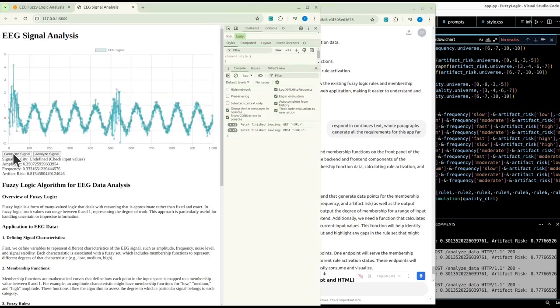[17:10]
To effectively visualize the fuzzy logic rules and membership functions on the front panel of the web application, we need to enhance both the backend and frontend components of the application. This will involve generating membership function data, calculating rule activation, and displaying these visualizations dynamically. Backend enhancements, Flask. First, we need to create functions in the backend that generate data points for the membership functions of each input variable, amplitude, frequency, and artifact risk, as well as the output variable, signal quality. These functions will output the degree of membership for a range of input values, which will then be plotted on the front end. Additionally, we need a function that calculates which fuzzy rules are activated based on the current input values.
This function will help identify which rules are contributing to the final output and highlight any gaps in the rule set that might lead to errors. To achieve this, we can create new Flask endpoints. One endpoint will serve the membership function data, and another will provide the current rule activation status. These endpoints will generate JSON data that the frontend can easily consume and visualize.
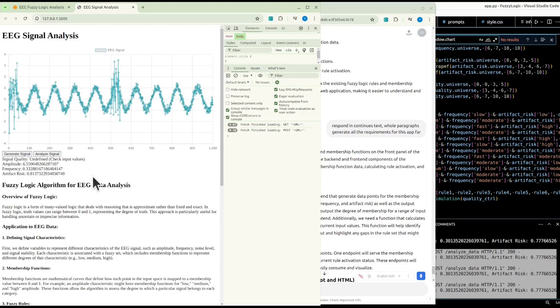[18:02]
Frontend enhancements, JavaScript and HTML. On the frontend, we need to integrate chart.js to plot the membership functions for each variable. This involves fetching the membership function data from the backend and using chart.js to create line charts that display how input values are mapped to fuzzy sets like low, medium, and high. These visualizations will help users understand how the input values are processed by the fuzzy logic system.
Additionally, we need to create an interactive rule activation table or chart. This table will dynamically update to show which fuzzy rules are activated based on the current input values. By visualizing the active rules, users can see how different combinations of input values influence the final output and identify any scenarios where no rules are activated, leading to the crisp output cannot be calculated error.
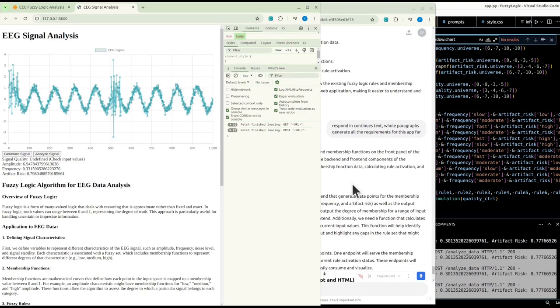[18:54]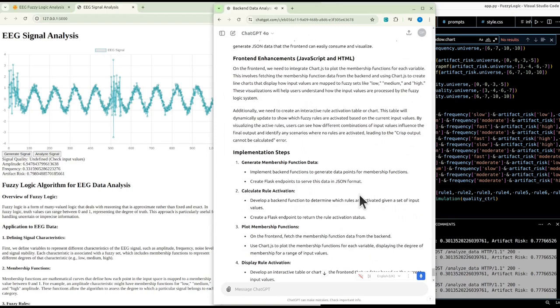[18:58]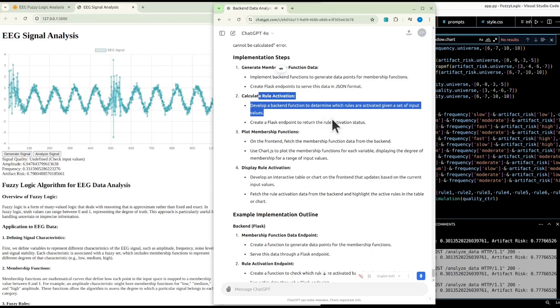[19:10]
Implementation steps. 1. Generate membership function data. Implement backend functions to generate data points for membership functions. Create Flask endpoints to serve this data in JSON format. 2. Calculate rule activation. Develop a backend function to determine which rules are activated given a set of input values. Create a Flask endpoint to return the rule activation status.
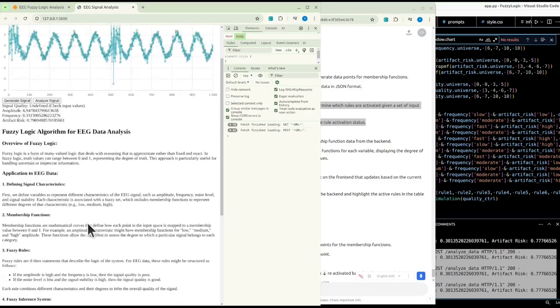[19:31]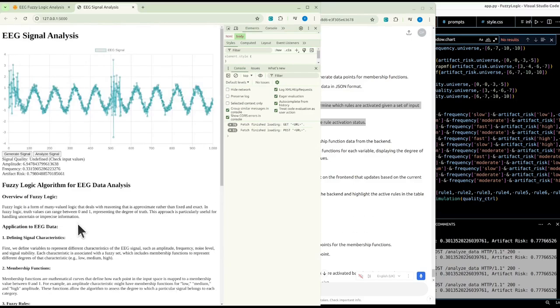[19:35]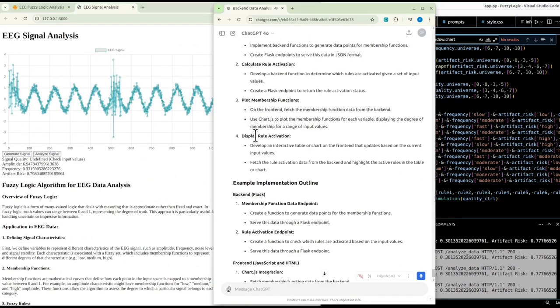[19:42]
3. Plot membership functions. On the front end, fetch the membership function data from the backend. Use chart.js to plot the membership functions for each variable, displaying the degree of membership for a range of input values. 4. Display rule activation. Develop an interactive table or chart on the front end that updates based on the current input values. Fetch the rule activation data from the backend and highlight the active rules in the table or chart.
Example implementation outline. Backend Flask. 1. Membership function data endpoint. Create a function to generate data points for the membership functions. Serve this data through a Flask endpoint. 2. Rule activation endpoint. Create a function to check which rules are activated based on the input values. Serve this data through a Flask endpoint.
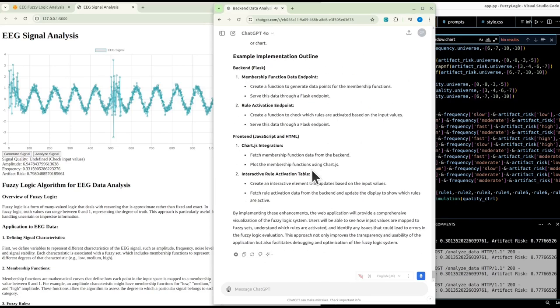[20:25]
Front end, JavaScript and HTML. 1. Chart.js integration. Fetch membership function data from the backend. Plot the membership functions using chart.js. 2. Interactive rule activation table. Create an interactive element that updates based on the input values. Fetch rule activation data from the backend and update the display to show which rules are active.
By implementing these enhancements, the web application will provide a comprehensive visualization of the fuzzy logic system. Users will be able to see how input values are mapped to fuzzy sets, understand which rules are activated, and identify any issues that could lead to errors in the fuzzy logic evaluation. This approach not only improves the transparency and usability of the application, but also facilitates debugging and optimization of the fuzzy logic system.
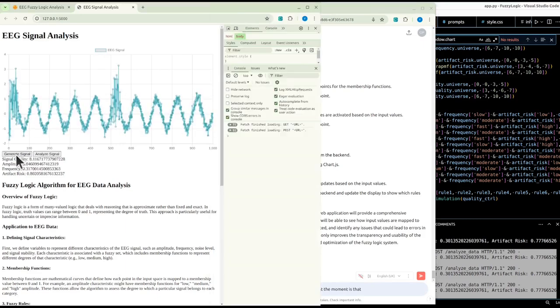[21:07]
We also have another issue, well, minor thing at the moment, is that because we have the generate signal button generating the signal and causing the analysis to be executed, do we really need the analyze signal button on the front page?
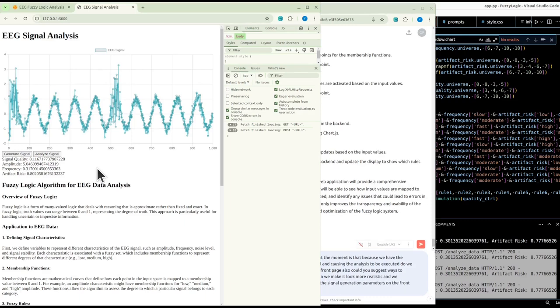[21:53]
Also, could you suggest ways to improve the EEG signal? So essentially, how can we make it look more realistic? We potentially would like to add controllers for the signal generation parameters on the front page as well, so we can see what difference it makes. Can we first get a response without any code, using continuous text, whole paragraphs?
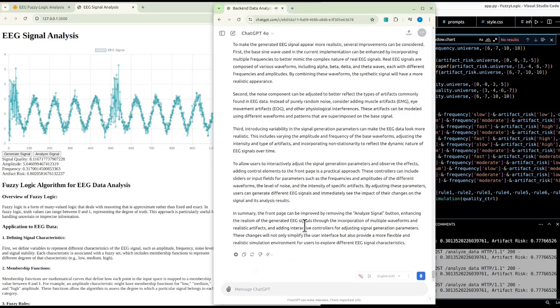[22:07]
Given that the generate signal button is currently responsible for both generating the EEG signal and triggering the analysis, the analyze signal button may no longer be necessary on the front page. Removing it can simplify the user interface, making the application more intuitive to use. Users would only need to press one button to generate and analyze the signal simultaneously, streamlining the workflow.
To make the generated EEG signal appear more realistic, several improvements can be considered. First, the base sine wave used in the current implementation can be enhanced by incorporating multiple frequencies to better mimic the complex nature of real EEG signals. Real EEG signals are composed of various waveforms, including alpha, beta, delta, and theta waves, each with different frequencies and amplitudes. By combining these waveforms, the synthetic signal will have a more realistic appearance.
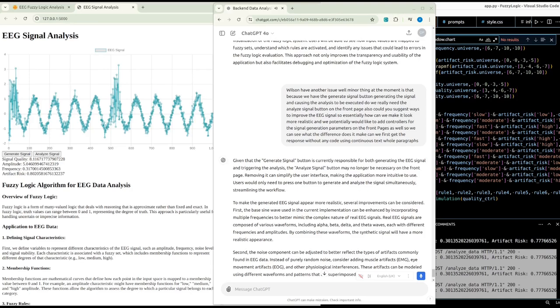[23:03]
Second, the noise component can be adjusted to better reflect the types of artifacts commonly found in EEG data.
Instead of purely random noise, consider adding muscle artifacts, EMG, eye movement artifacts, EOG, and other physiological interferences. These artifacts can be modeled using different waveforms and patterns that are superimposed on the base signal. Third, introducing variability in the signal generation parameters can make the EEG data look more realistic. This includes varying the amplitude and frequency of the base waveforms, adjusting the intensity and type of artifacts, and incorporating non-stationarity to reflect the dynamic nature of EEG signals over time.
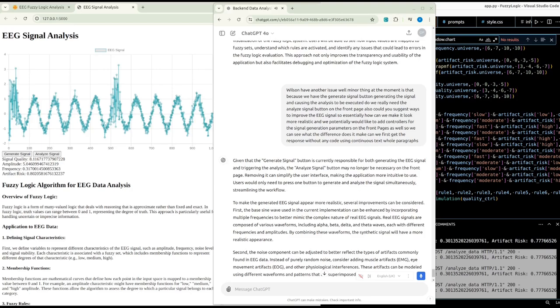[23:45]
To allow users to interactively adjust the signal generation parameters and observe the effects, adding control elements to the front page is a practical approach. These controllers can include sliders or input fields for parameters such as the frequencies and amplitudes of the different waveforms, the level of noise, and the intensity of specific artifacts. By adjusting these parameters, users can generate different EEG signals and immediately see the impact of their changes on the signal and its analysis results.
In summary, the front page can be improved by removing the Analyze Signal button, enhancing the realism of the generated EEG signals through the incorporation of multiple waveforms and realistic artifacts, and adding interactive controllers for adjusting signal generation parameters. These changes will not only simplify the user interface, but also provide a more flexible and realistic simulation environment for users to explore different EEG signal characteristics.
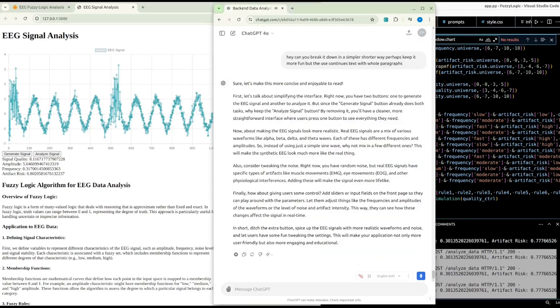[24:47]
Sure, let's make this more concise and enjoyable to read. First, let's talk about simplifying the interface. Right now, you have two buttons, one to generate the EEG signal and another to analyze it. But since the Generate Signal button already does both tasks, why keep the Analyze Signal button? By removing it, you'll have a cleaner, more straightforward interface where users press one button to see everything they need.
Now, about making the EEG signals look more realistic. Real EEG signals are a mix of various waveforms like alpha, beta, delta, and theta waves. Each of these has different frequencies and amplitudes. So instead of using just a simple sine wave, why not mix in a few different ones? This will make the synthetic EEG look much more like the real thing. Also, consider tweaking the noise. Right now, you have random noise, but real EEG signals have specific types of artifacts like muscle movements, EMG, eye movements, EOG, and other physiological interferences. Adding these will make the signal even more lifelike.
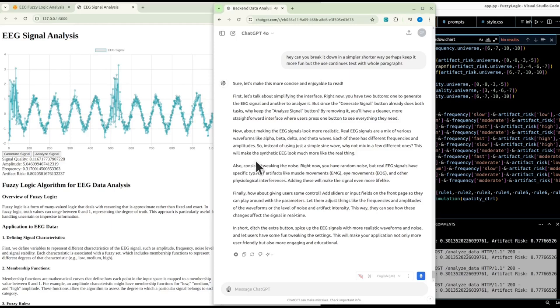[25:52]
Finally, how about giving users some control? Add sliders or input fields on the front page so they can play around with the parameters. Let them adjust things like the frequencies and amplitudes of the waveforms or the level of noise and artifact intensity. This way, they can see how these changes affect the signal in real time. In short, ditch the extra button, spice up the EEG signals with more realistic waveforms and noise, and let users have some fun tweaking the settings. This will make your application not only more user-friendly, but also more engaging and educational.
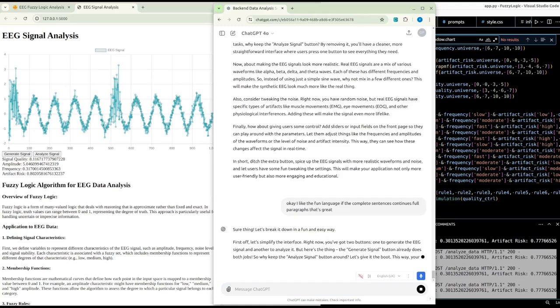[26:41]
Yeah, I like the fun language with the complete sentences, continuous full paragraphs. That's great. I didn't update history.
Sure thing. Let's break it down in a fun and easy way. First off, let's simplify the interface. Right now, you've got two buttons, one to generate the EEG signal and another to analyze it. But here's the thing, the Generate Signal button already does both jobs. So why keep the Analyze Signal button around? Let's give it the boot. This way, your interface will be cleaner and more user-friendly. Users will only need to press one button to see everything they need.
Easy peasy. Next, let's make those EEG signals look more realistic. Real EEG signals are like a complex symphony of different waveforms, alpha, beta, delta, and theta waves, each with its own unique frequency and amplitude. So instead of using just a plain old sine wave, why not mix in a few different ones? By combining these waveforms, your synthetic EEG signals will look much more like the real deal. It's like going from a simple tune to a full-blown orchestra.
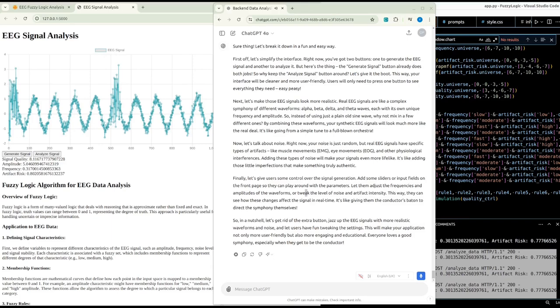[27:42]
Now, let's talk about noise. Right now, your noise is just random, but real EEG signals have specific types of artifacts, like muscle movements, EMG, eye movements, EOG, and other physiological interferences. Adding these types of noise will make your signals even more lifelike. It's like adding those little imperfections that make something truly authentic.
Finally, let's give users some control over the signal generation. Add some sliders or input fields on the front page so they can play around with the parameters. Let them adjust the frequencies and amplitudes of the waveforms or tweak the level of noise and artifact intensity.
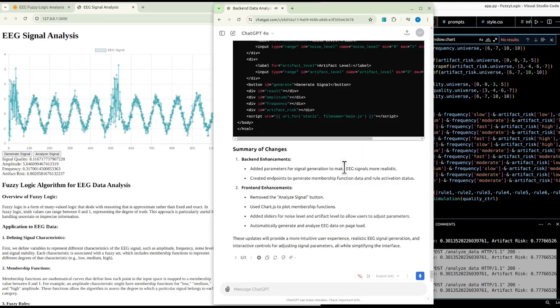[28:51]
This way, they can see how these changes affect the signal in real time. It's like giving them the conductor's baton to direct the symphony themselves. So in a nutshell, let's get rid of the extra button, jazz up the EEG signals with more realistic waveforms and noise, and let users have fun tweaking the settings. This will make your application not only more user-friendly, but also more engaging and educational. Everyone loves a good symphony, especially when they get to be the conductor. Method, post, headers, content type, application JSON.
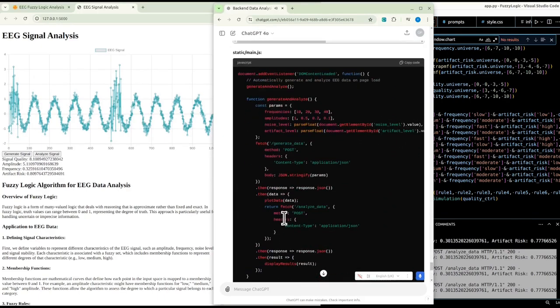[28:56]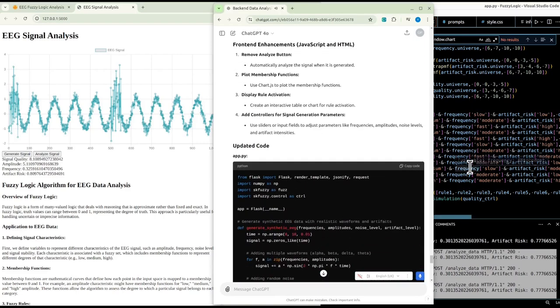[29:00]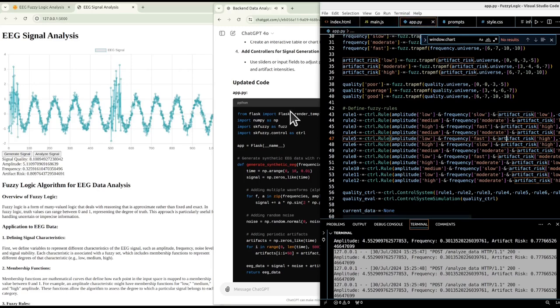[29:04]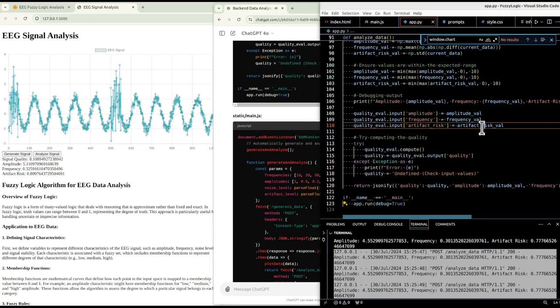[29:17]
Sure, let's dive into the updates with some fun and detailed explanations. Backend enhancements, making the magic happen. First up, the backend. We've supercharged the EEG signal generation process. Instead of just a simple sine wave, our new function combines multiple waveforms like alpha, beta, delta, and theta waves, giving you a symphony of frequencies and amplitudes that mimic real EEG signals.
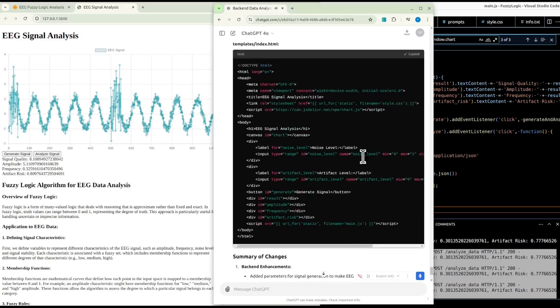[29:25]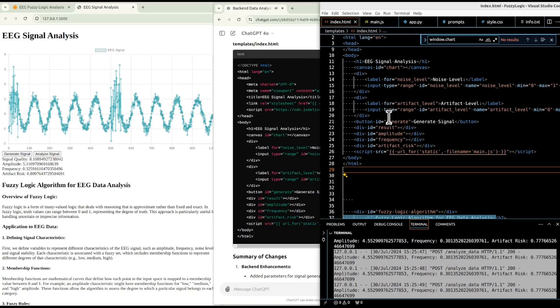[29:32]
We've also added some realistic noise and artifacts to spice things up, simulating muscle movements and eye twitches. These artifacts make the synthetic EEG data look like the real deal. Plus, we've included parameters like noise level and artifact level, so you can tweak these elements on the fly. To make this all work, we set up endpoints in Flask. When you hit the Generate Signal button, the backend gets your parameters, generates the data, and sends it back.
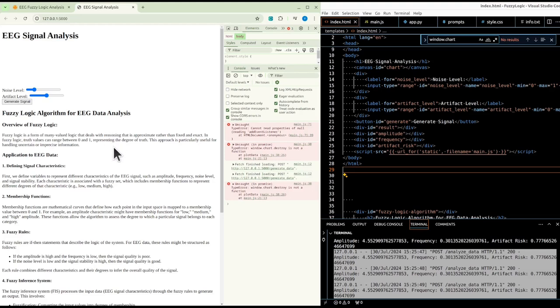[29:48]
Then, another endpoint analyzes this data, checking out the amplitude, frequency, and artifact risk before running it through our fuzzy logic system. This system has a bunch of rules that determine the quality of the signal, and we've expanded these rules to cover more scenarios. So, no more errors about the system being too sparse.
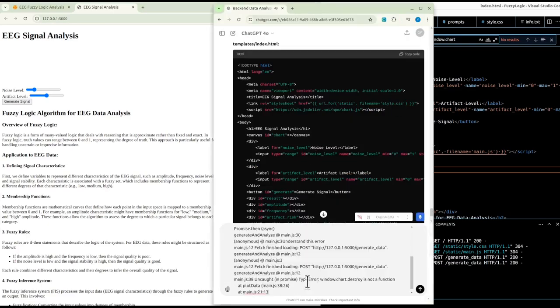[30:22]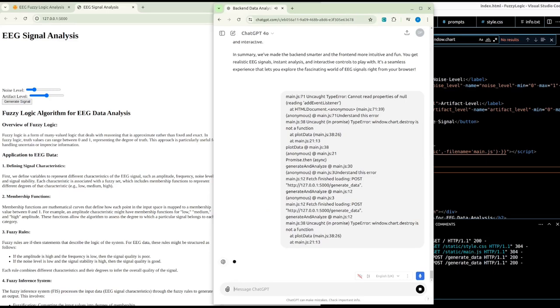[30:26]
Front-end enhancements. User-friendly and interactive. Now, onto the front-end. We've streamlined the interface by ditching the Analyze Signal button. Who needs it when the Generate Signal button does both jobs? This means when you generate a signal, it's automatically analyzed, and you get instant feedback.
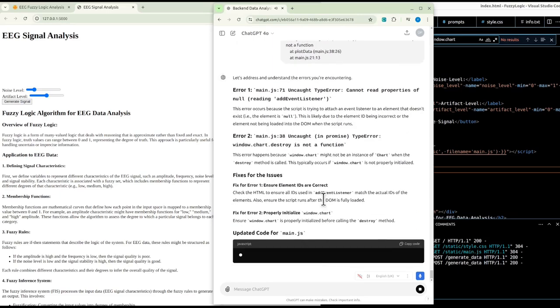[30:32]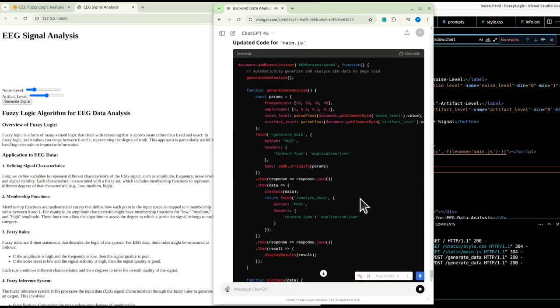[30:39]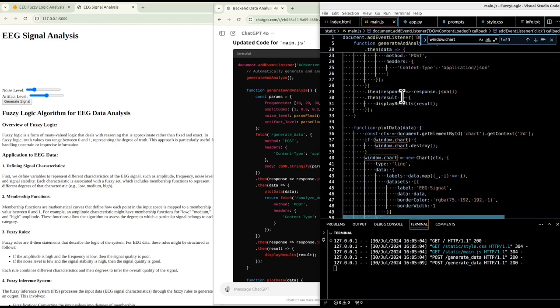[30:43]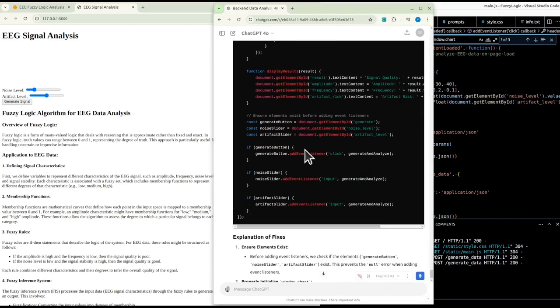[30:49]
We've added some cool sliders for noise level and artifact level right on the front page. You can slide these around to see how different levels of noise and artifacts affect the EEG signal. This gives you a hands-on way to experiment with the signal parameters. To make everything visual and interactive, we integrated chart.js. This library helps us plot the EEG signals, and it's showing you exactly what's happening.
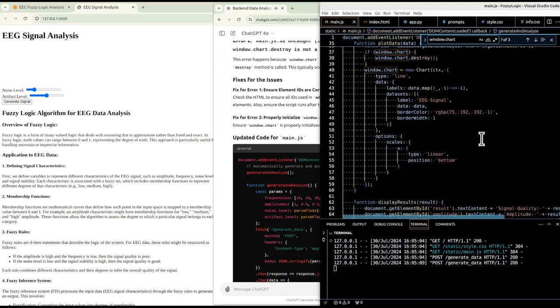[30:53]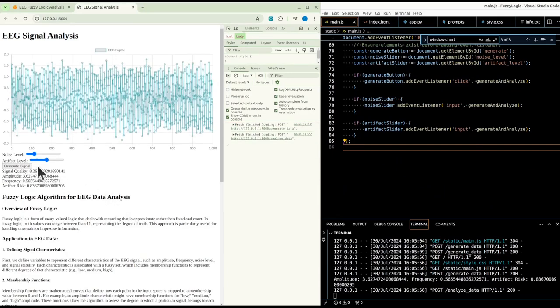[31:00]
When you generate a signal, it gets plotted on a nice clean chart. We also display the results of the analysis, amplitude, frequency, and artifact risk, so you can see all the important details at a glance. Bringing it all together. When you load the page, everything kicks off automatically. The EEG signal is generated with your default parameters, and the analysis runs without you lifting a finger.
If you want to change things up, just adjust the sliders and hit Generate Signal again to see how the new parameters affect the signal. The backend handles all the heavy lifting, while the frontend keeps everything smooth and interactive. In summary, we've made the backend smarter and the frontend more intuitive and fun. You get realistic EEG signals, instant analysis, and interactive controls to play with. It's a seamless experience that lets you explore the fascinating world of EEG signals right from your browser.
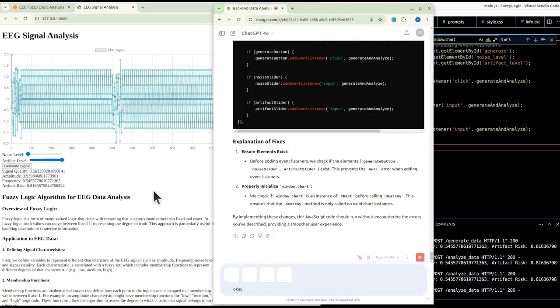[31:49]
Okay, so it's generally working with no errors, which is great. However, the controls do not make much sense. See example images. Can you explain what's going on in text alone? Continuous sentences, whole paragraphs, make it detailed, but fun.
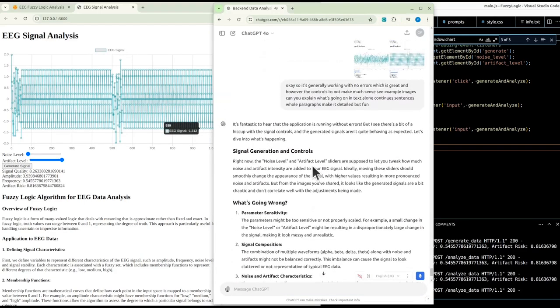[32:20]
It's fantastic to hear that the application is running without errors. But I see there's a bit of a hiccup with the signal controls, and the generated signals aren't quite behaving as expected. Let's dive into what's happening. Signal generation and controls. Right now, the noise level and artifact level sliders are supposed to let you tweak how much noise and artifact intensity are added to your EEG signal.
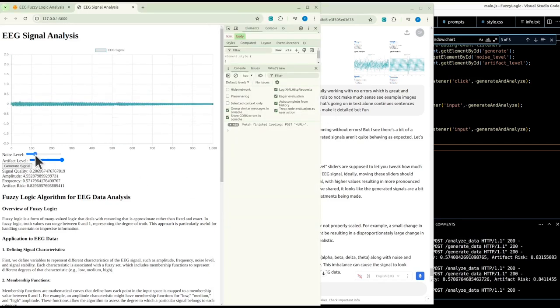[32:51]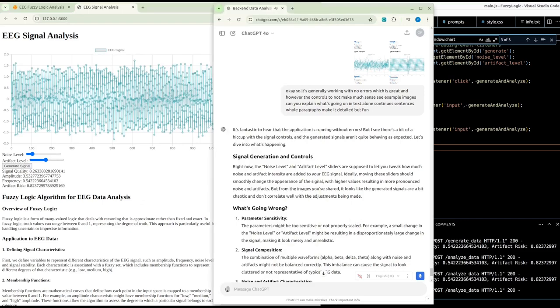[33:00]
Ideally, moving these sliders should smoothly change the appearance of the signal, with higher values resulting in more pronounced noise and artifacts. But from the images you've shared, it looks like the generated signals are a bit chaotic and don't correlate well with the adjustments being made. What's going wrong? One, parameter sensitivity. The parameters might be too sensitive or not properly scaled. For example, a small change in the noise level or artifact level might be resulting in a disproportionately large change in the signal, making it look messy and unrealistic.
Two, signal composition. The combination of multiple waveforms, alpha, delta, theta, along with noise and artifacts, might not be balanced correctly. This imbalance can cause the signal to look cluttered or not representative of typical EEG data.
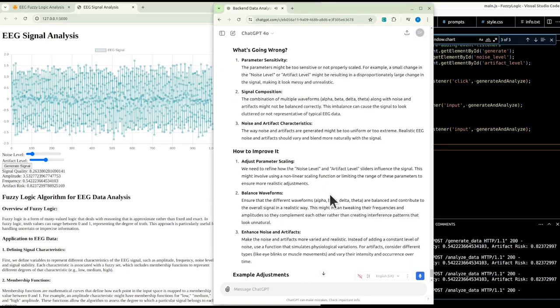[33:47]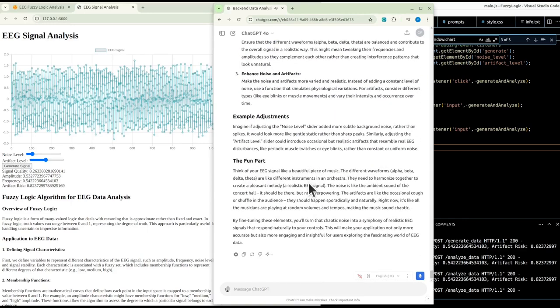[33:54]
Three, noise and artifact characteristics. The way noise and artifacts are generated might be too uniform or too extreme. Realistic EEG noise and artifacts should vary and blend more naturally with the signal. How to improve it? One, adjust parameter scaling. We need to refine how the noise level and artifact level sliders influence the signal. This might involve using a nonlinear scaling function or limiting the range of these parameters to ensure more realistic adjustments.
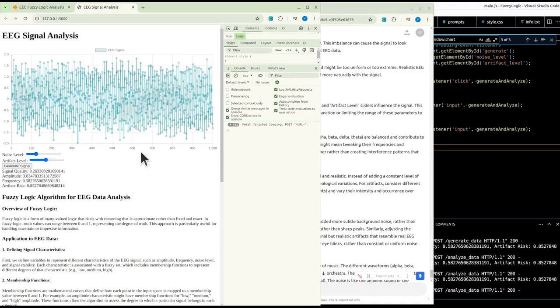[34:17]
Number two, balance waveforms. Ensure that the different waveforms, alpha, beta, delta, theta, are balanced and contribute to the overall signal in a realistic way. This might mean tweaking their frequencies and amplitudes so they complement each other rather than creating interference patterns that look unnatural. Three, enhance noise and artifacts.
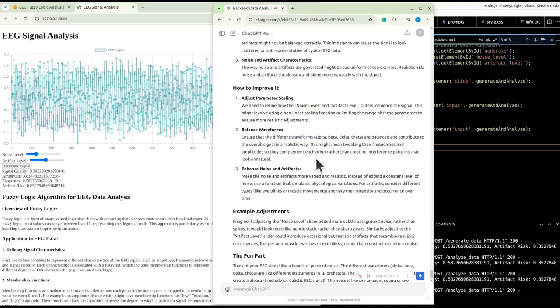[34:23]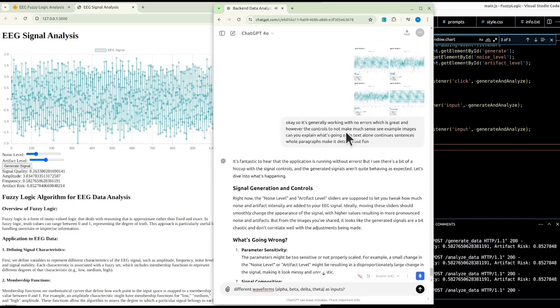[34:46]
Make the noise and artifacts more varied and realistic. Instead of adding a constant level of noise, use a function that simulates physiological variations. For artifacts, consider different types, like eye blinks or muscle movements, and vary their intensity and occurrence over time. Example adjustments. Imagine if adjusting the noise level slider added more subtle background noise rather than spikes. It would look more like gentle static rather than sharp peaks.
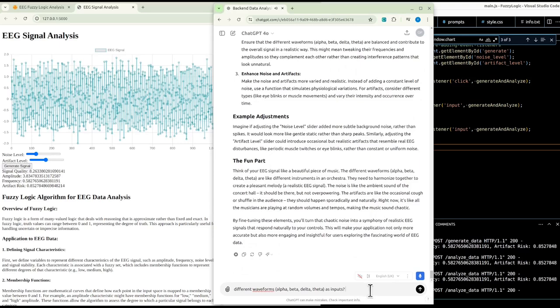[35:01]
Similarly, adjusting the artifact level slider could introduce occasional but realistic artifacts that resemble real EEG disturbances, like periodic muscle twitches or eye blinks, rather than constant or uniform noise.
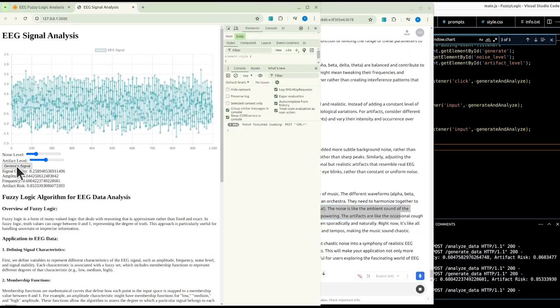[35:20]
The fun part? Think of your EEG signal like a beautiful piece of music. The different waveforms, alpha, beta, delta, theta, are like different instruments in an orchestra. They need to harmonize together to create a pleasant melody, a realistic EEG signal. The noise is like the ambient sound of the concert hall. It should be there, but not overpowering. The artifacts are like the occasional cough or shuffle in the audience. They should happen sporadically and naturally.
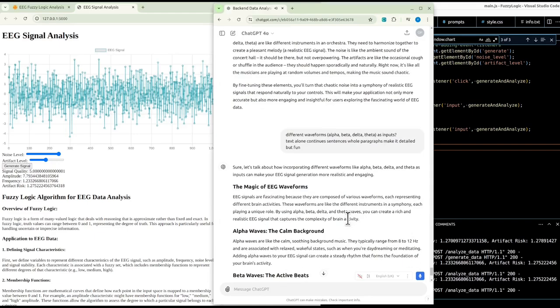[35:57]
Right now, it's like all the musicians are playing at random volumes and tempos, making the music sound chaotic. By fine-tuning these elements, you'll turn that chaotic noise into a symphony of realistic EEG signals that respond naturally to your controls. This will make your application not only more accurate, but also more engaging and insightful for users exploring the fascinating world of EEG data.
Sure, let's talk about how incorporating different waveforms like alpha, beta, delta, and theta as inputs can make your EEG signal generation more realistic and engaging. The magic of EEG waveforms. EEG signals are fascinating because they are composed of various waveforms, each representing different brain activities. These waveforms are like the different instruments in a symphony, each playing a unique role. By using alpha, beta, delta, and theta waves, you can create a rich and realistic EEG signal that captures the complexity of brain activity.
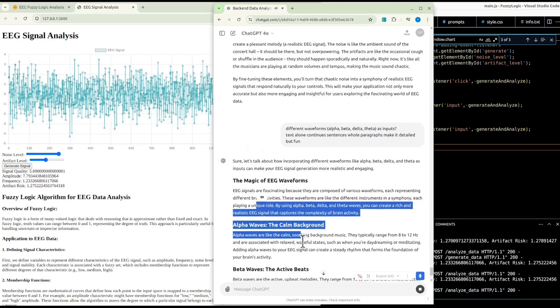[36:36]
Alpha waves, the calm background. Alpha waves are like the calm, soothing background music. They typically range from 8 to 12 hertz and are associated with relaxed, wakeful states, such as when you're daydreaming or meditating. Adding alpha waves to your EEG signal can create a steady rhythm that forms the foundation of your brain's activity.
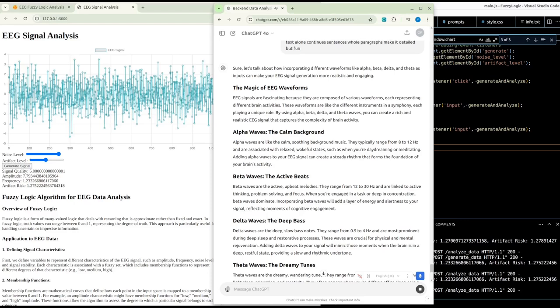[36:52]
Beta waves, the active beats. Beta waves are the active, upbeat melodies. They range from 12 to 30 hertz and are linked to active thinking, problem solving, and focus. When you're engaged in a task or deep in concentration, beta waves dominate. Incorporating beta waves will add a layer of energy and alertness to your signal, reflecting moments of cognitive engagement.
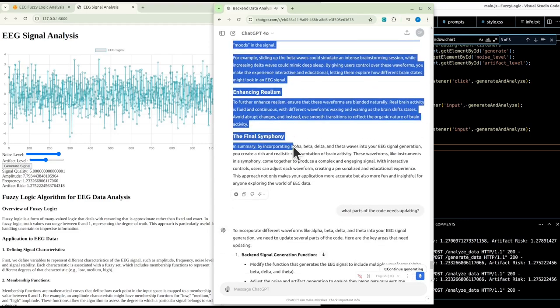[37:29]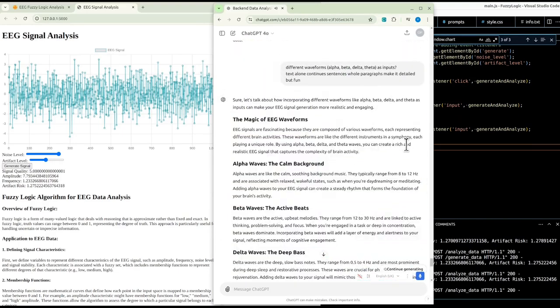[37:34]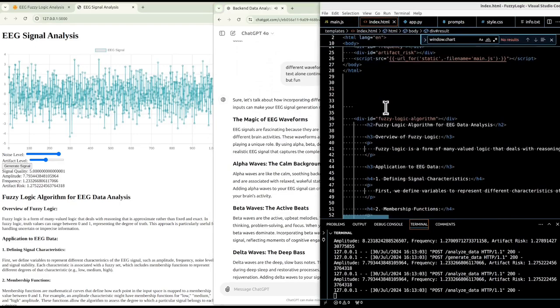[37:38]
Delta waves, the deep bass. Delta waves are the deep, slow bass notes. They range from 0.5 to 4 hertz and are most prominent during deep sleep and restorative processes. These waves are crucial for physical and mental rejuvenation. Adding delta waves to your signal will mimic those moments when the brain is in a deep, restful state, providing a slow and rhythmic undertone.
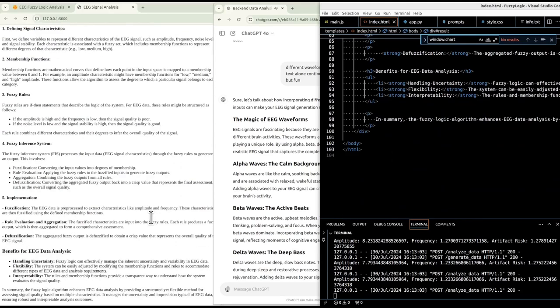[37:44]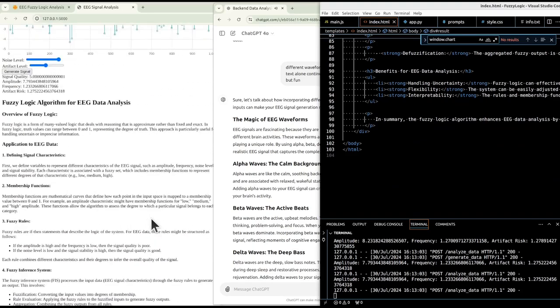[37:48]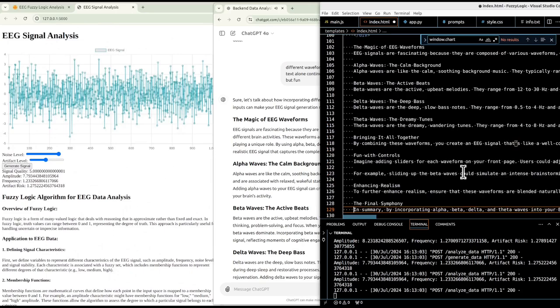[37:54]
Theta waves, the dreamy tunes. Theta waves are the dreamy, wandering tunes. They range from 4 to 8 hertz and are associated with light sleep, relaxation, and creativity. They often appear when you're drifting off to sleep or in a deeply relaxed state. Theta waves will bring a sense of creativity and tranquility to your EEG signal, adding another layer of complexity.
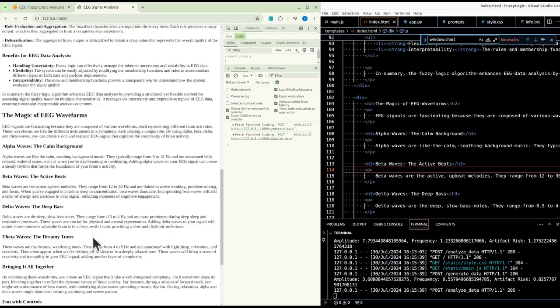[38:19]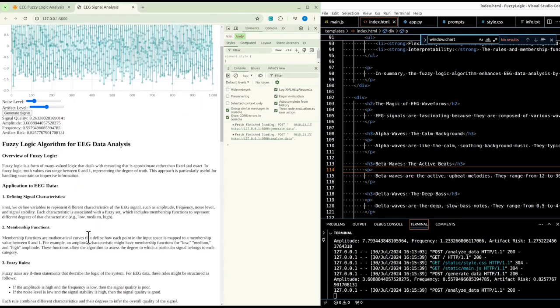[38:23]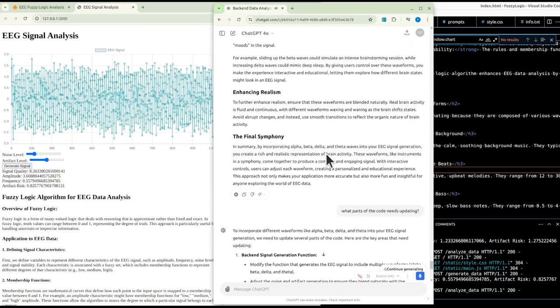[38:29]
Bringing it all together. By combining these waveforms, you create an EEG signal that's like a well-composed symphony. Each waveform plays its part, blending together to reflect the dynamic nature of brain activity. For instance, during a session of focused work, you might see a dominance of beta waves, with underlying alpha waves providing a steady rhythm. During relaxation, alpha and theta waves might dominate, creating a calming and serene pattern. Fun with controls.
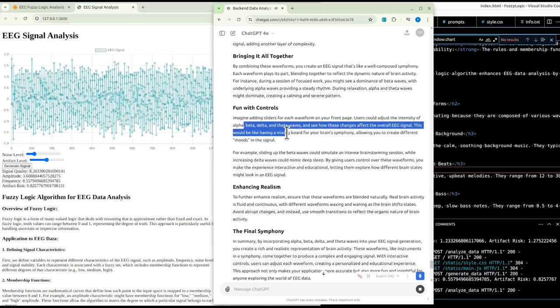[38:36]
Imagine adding sliders for each waveform on your front page. Users could adjust the intensity of alpha, beta, delta, and theta waves and see how these changes affect the overall EEG signal. This would be like having a mixing board for your brain's symphony, allowing you to create different moods in the signal. For example, sliding up the beta waves could simulate an intense brainstorming session, while increasing delta waves could mimic deep sleep. By giving users control over these waveforms, you make the experience interactive and educational, letting them explore how different brain states might look in an EEG signal.
Enhancing realism. To further enhance realism, ensure that these waveforms are blended naturally. Real brain activity is fluid and continuous, with different waveforms waxing and waning as the brain shifts states. Avoid abrupt changes, and instead use smooth transitions to reflect the organic nature of brain activity.
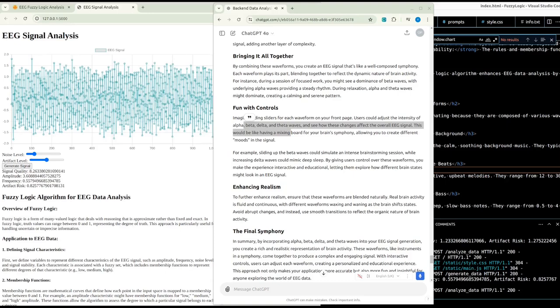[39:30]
The final symphony. In summary, by incorporating alpha, beta, delta, and theta waves into your EEG signal generation, you create a rich and realistic representation of brain activity. These waveforms, like instruments in a symphony, come together to produce a complex and engaging signal. With interactive controls, users can adjust each waveform, creating a personalized and educational experience. This approach not only makes your application more accurate, but also more fun and insightful for anyone exploring the world of EEG data.
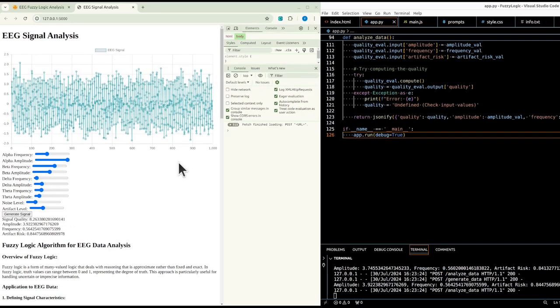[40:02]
Yeah, so we have something working. Let's set the default settings. You can't really see the amplitude. Right, so that's the artifact. This is the noise. Yeah, we need to adjust the levels. We have alpha. Let's check if the EEG makes any sense. Okay, so we have alpha, beta, delta, theta, and we can add noise on top of it, and the EMG artifact.
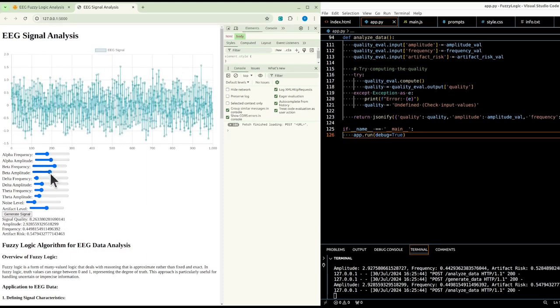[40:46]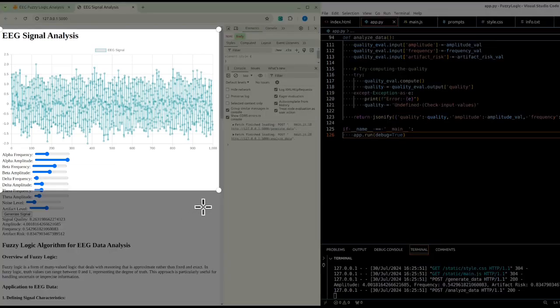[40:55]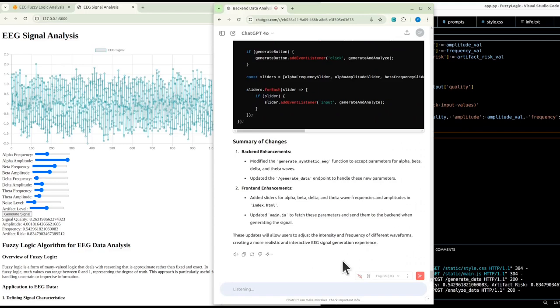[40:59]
It does make sense. Alpha, yeah, we need the values. Okay, let's ask the robot, and hopefully it will become clearer as well. Okay, so first of all, it's working with no errors. So this is great. Thank you very much.
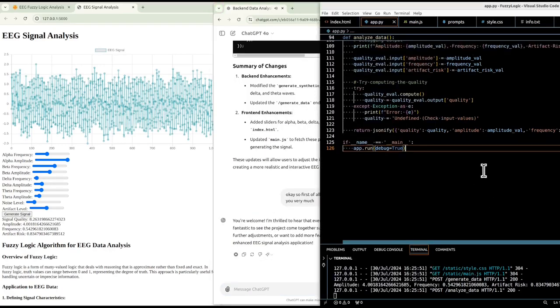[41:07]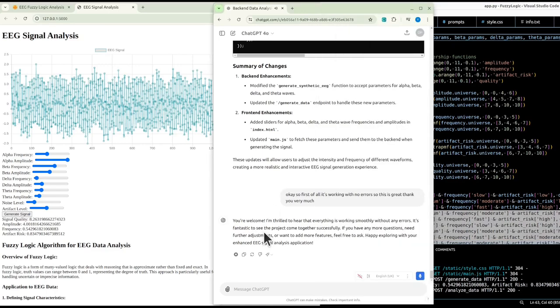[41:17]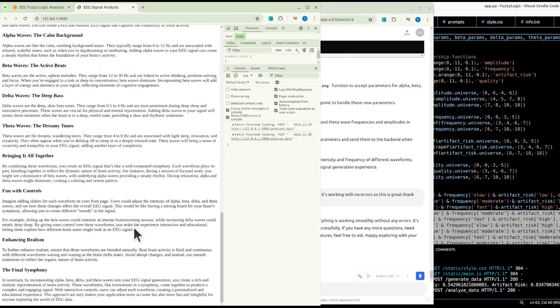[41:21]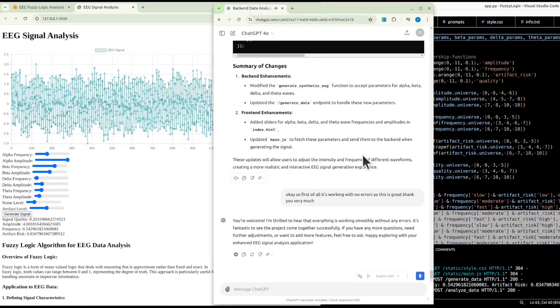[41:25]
You're welcome. I'm thrilled to hear that everything is working smoothly without any errors. It's fantastic to see the project come together successfully. If you have any more questions, need further adjustments, or want to add more features, feel free to ask. Happy exploring with your enhanced EEG signal analysis application.
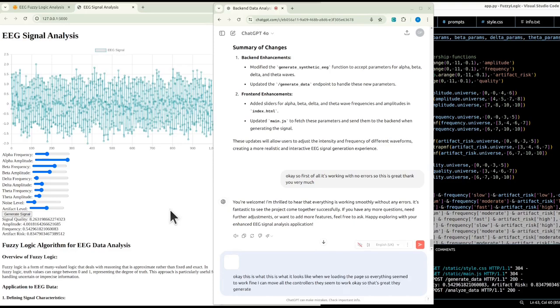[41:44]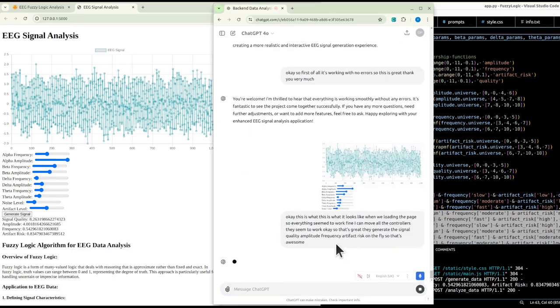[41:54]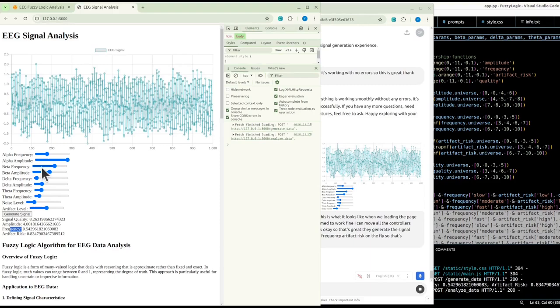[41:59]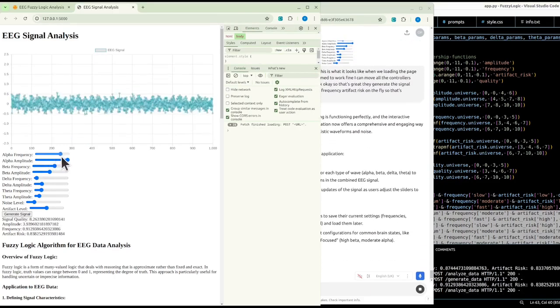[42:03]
This is what it looks like when we are loading the page. So everything seemed to work fine. I can move all the controllers. They seem to work okay. So that's great. They generate the signal quality, amplitude, frequency, artifact risk on the fly. So that's awesome. Just submit it as is, see what we get. The frequency. If you take alpha frequency, the frequencies seem to work. I need probably a reminder of which one is which.
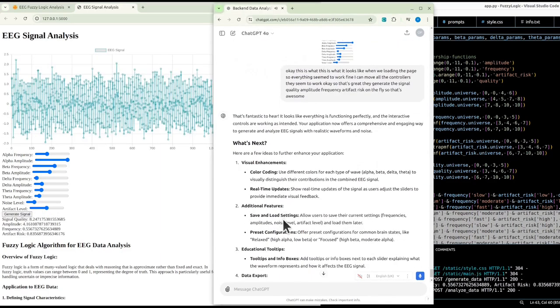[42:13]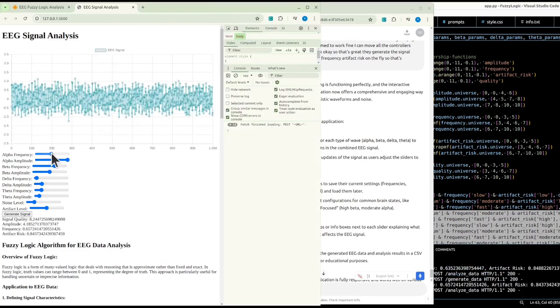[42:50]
That's fantastic to hear. It looks like everything is functioning perfectly, and the interactive controls are working as intended. Your application now offers a comprehensive and engaging way to generate and analyze EEG signals with realistic waveforms and noise. What's next? Here are a few ideas to further enhance your application. 1. Visual enhancements. Color coding. Use different colors for each type of wave, alpha, beta, delta, theta, to visually distinguish their contributions in the combined EEG signal. Real-time updates. Show real-time updates of the signal as users adjust the sliders to provide immediate visual feedback.
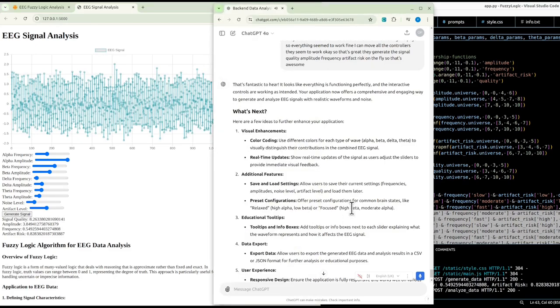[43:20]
2. Additional features. Save and load settings. Allow users to save their current settings, frequencies, amplitudes, noise level, artifact level, and load them later. Preset configurations. Offer preset configurations for common brain states like relaxed, high alpha, low beta, or focused, high beta, moderate alpha. 3. Educational tooltips. Tooltips and infoboxes. Add tooltips or infoboxes next to each slider explaining what the waveform represents and how it affects the EEG signal. 4. Data export. Export data. Allow users to export the generated EEG data and analysis results in a CSV or JSON format for further analysis or educational purposes.
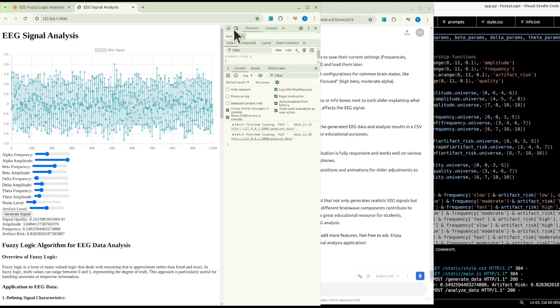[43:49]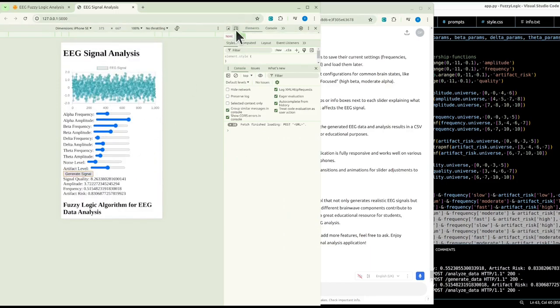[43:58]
5. User experience. Responsive design. Ensure the application is fully responsive and works well on various devices, including tablets and smartphones. Smooth transitions. Add smooth transitions and animations for slider adjustments to enhance the user experience. Celebrating success. You've created a powerful and interactive tool that not only generates realistic EEG signals, but also provides a hands-on way to explore how different brainwave components contribute to overall brain activity. This application can be a great educational resource for students, researchers, and enthusiasts interested in EEG analysis.
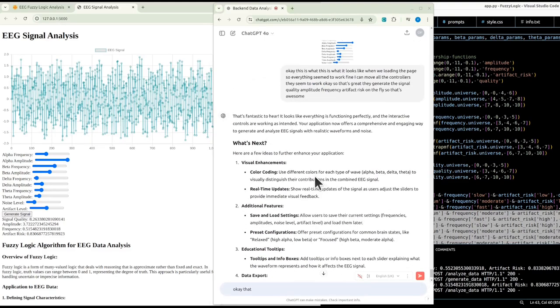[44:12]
And that sounds great. Let's go one by one about what could be done next. Color coding sounds great. But I'm not sure how exactly you are going to do it. Can you explain first? How are you suggesting to do the color coding? Now, real-time updates seem to be already happening. So that seems to be working okay already. So no changes needed there.
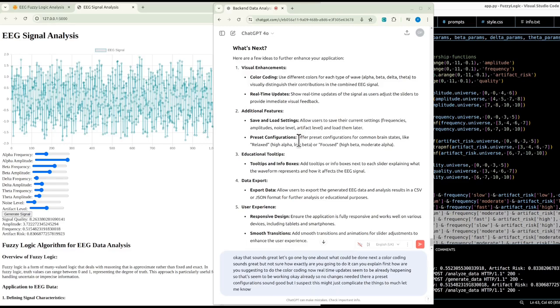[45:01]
Preset configurations sound good, but I suspect this might just complicate things too much. Let me know what you think. Tooltips and info boxes sound very good, so I could really use those, that they will really help. Also, on the same topic, can we actually display the current value next to the sliders? Maybe. Unless you think it will be overpopulating the panel.
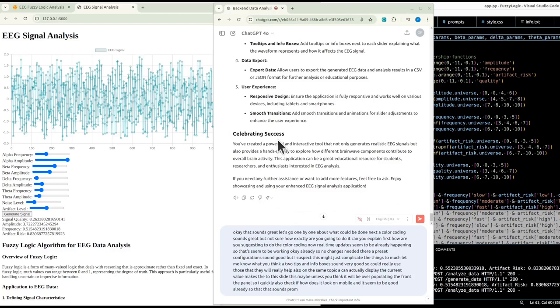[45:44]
So I quickly also checked how it looks on mobile, and it seemed to be good already. That sounds promising, and keep it technical but yet fun. That would be greatly appreciated.
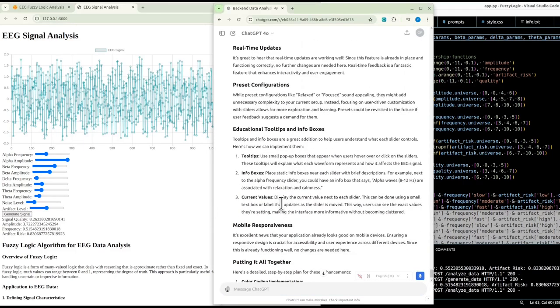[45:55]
Absolutely. Let's dive into each of these enhancements and see how we can make your EEG signal analysis tool even better, step by step. Color coding. Color coding the different waveforms can make it visually clearer which component contributes to the overall EEG signal. Here's how we can implement this.
1. Identify components. We'll separate the signal into its constituent waveforms: alpha, beta, delta, and theta. 2. Assign colors. Assign a distinct color to each waveform. For instance, alpha could be blue, beta could be red, delta could be green, and theta could be purple. 3. Plot components separately. Modify the plotting function to plot each waveform separately in its assigned color before combining them into the final EEG signal.
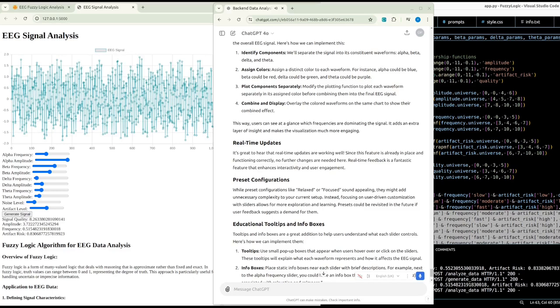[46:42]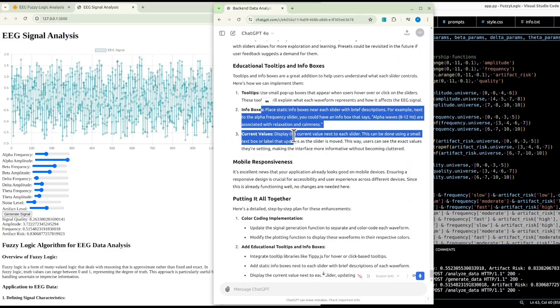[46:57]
4. Combine and display. Overlay the colored waveforms on the same chart to show their combined effect. This way, users can see at a glance which frequencies are dominating the signal. It adds an extra layer of insight and makes the visualization much more engaging. Real-time updates. It's great to hear that real-time updates are working well. Since this feature is already in place and functioning correctly, no further changes are needed here. Real-time feedback is a fantastic feature that enhances interactivity and user engagement.
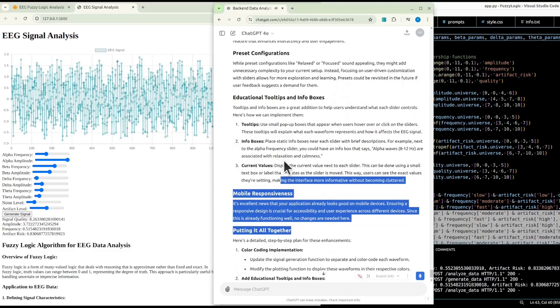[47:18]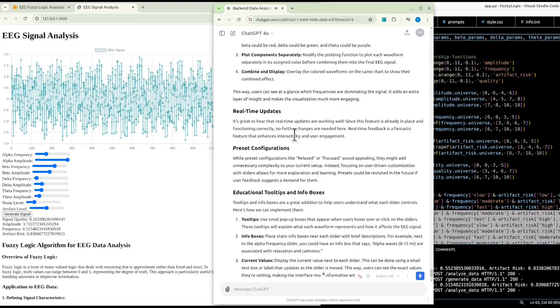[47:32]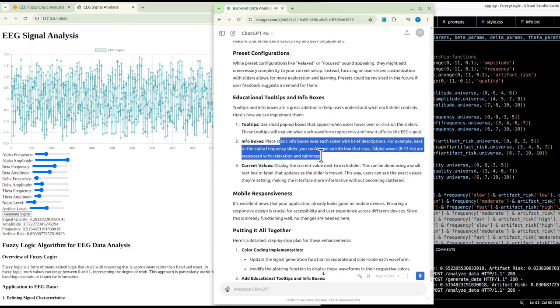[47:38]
Preset configurations. While preset configurations like relaxed or focused sound appealing, they might add unnecessary complexity to your current setup. Instead, focusing on user-driven customization with sliders allows for more exploration and learning. Presets could be revisited in the future if user feedback suggests a demand for them. Educational tooltips and info boxes. Tooltips and info boxes are a great addition to help users understand what each slider controls.
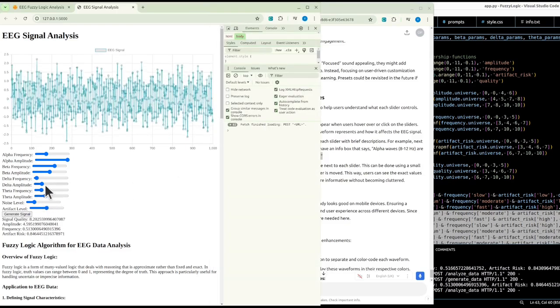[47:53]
Here's how we can implement them. 1. Tooltips. Use small pop-up boxes that appear when users hover over or click on the sliders. These tooltips will explain what each waveform represents and how it affects the EEG signal. 2. Info boxes. Place static info boxes near each slider with brief descriptions. For example, next to the alpha frequency slider, you could have an info box that says, alpha waves, 8 to 12 hertz, are associated with relaxation and calmness.
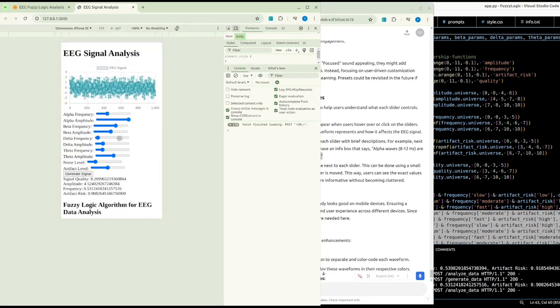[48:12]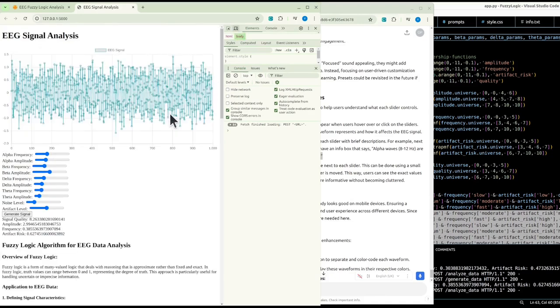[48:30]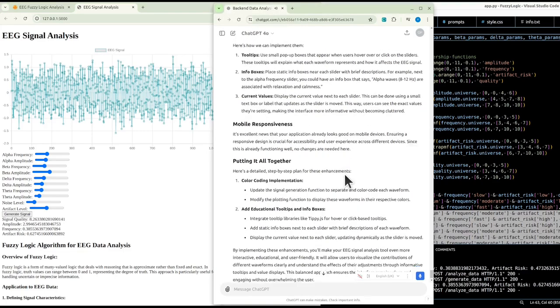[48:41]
3. Current values. Display the current value next to each slider. This can be done using a small text box or label that updates as the slider is moved. This way, users can see the exact values they're setting, making the interface more informative without becoming cluttered. Mobile responsiveness. It's excellent news that your application already looks good on mobile devices. Ensuring a responsive design is crucial for accessibility and user experience across different devices. Since this is already functioning well, no changes are needed here.
Putting it all together. Here's a detailed step-by-step plan for these enhancements. 1. Color coding implementation. Update the signal generation function to separate and color code each waveform. Modify the plotting function to display these waveforms in their respective colors. 2. Add educational tooltips and info boxes. Integrate tooltip libraries like tippy.js for hover or click-based tooltips. Add static info boxes next to each slider with brief descriptions of each waveform. Display the current value next to each slider, updating dynamically as the slider is moved.
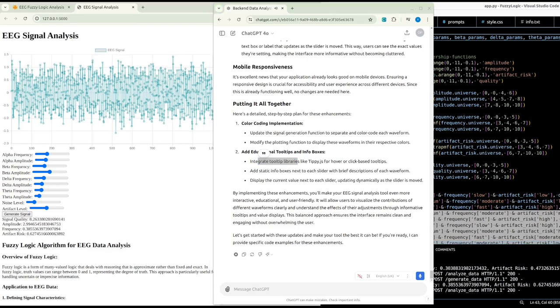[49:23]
By implementing these enhancements, you'll make your EEG signal analysis tool even more interactive, educational, and user-friendly. It will allow users to visualize the contributions of different waveforms clearly and understand the effects of their adjustments through informative tooltips and value displays. This balanced approach ensures the interface remains clean and engaging without overwhelming the user. Let's get started with these updates and make your tool the best it can be. If you're ready, I can provide specific code examples for these enhancements.
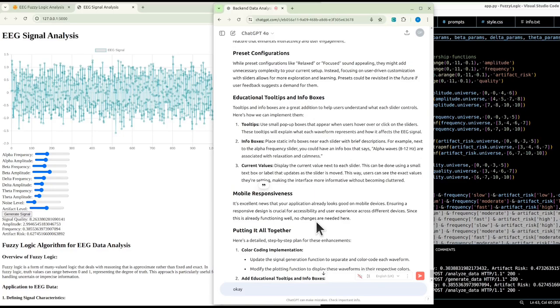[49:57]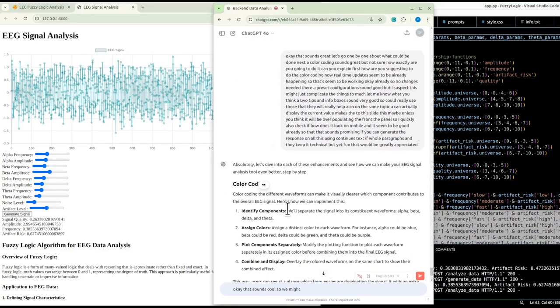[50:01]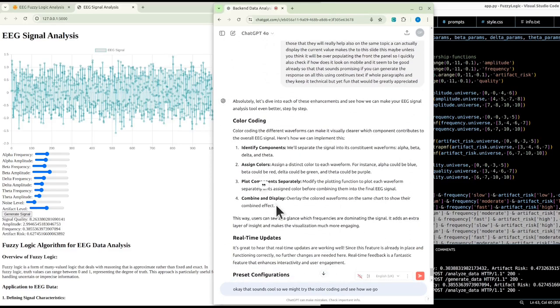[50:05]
That sounds good. So we might try the color coding and see how we go. We don't want too many things on the screen or too many colors, because I think currently it's suggesting more a chart essentially displayed.
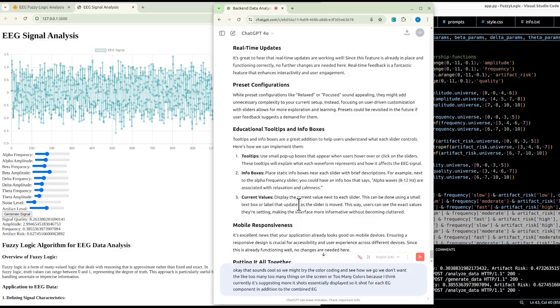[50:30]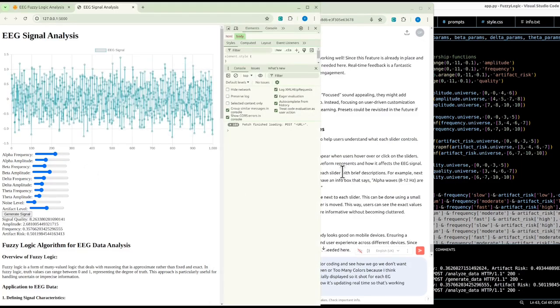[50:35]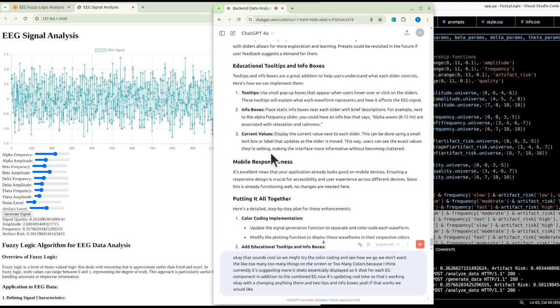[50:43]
So a chart for each EEG component in addition to the combined EEG. Now, it's updating in real time, so that's working okay. We're not changing anything there. Tooltips and info boxes, if that works, we would like to add that, definitely, yes.
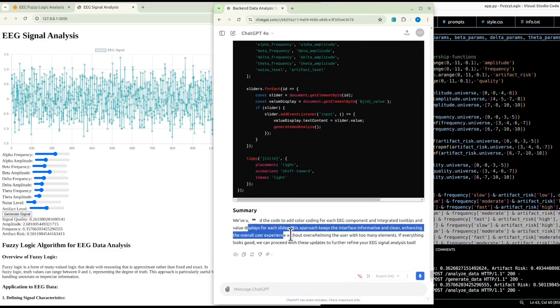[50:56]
So as much information as possible, but keeping the interface nice and clean. We have updated code to add color coding for each EEG component and integrate tooltips for each slider. Supposedly when I hover over, it will show me some useful information. That would be nice. We like the interface informative and clean. We don't want to overwhelm the user with too many elements. I think this is probably already bordering on too many elements.
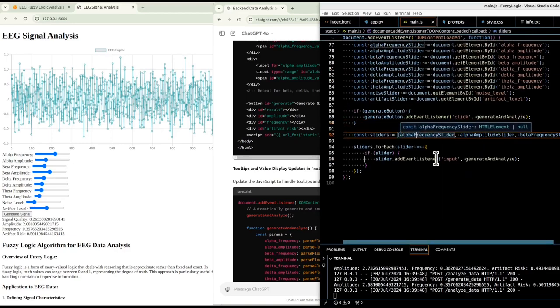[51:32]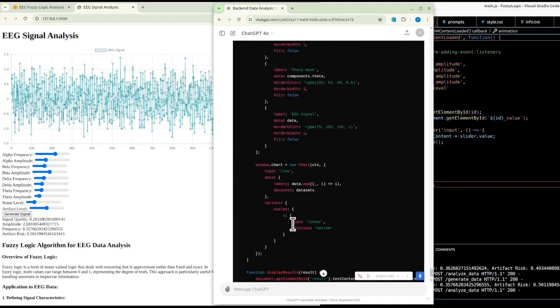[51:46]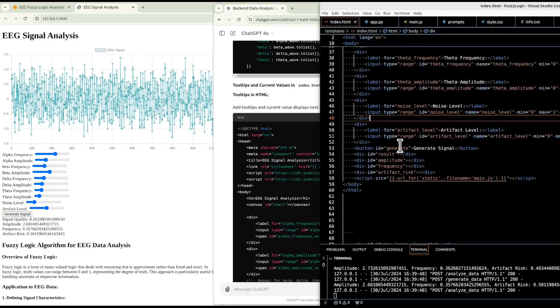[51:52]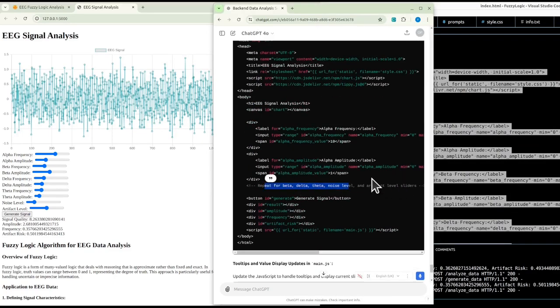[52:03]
So we have updated JavaScript. We currently have already 100 lines of code, and we just added another 30 or so. Try it out. We should be able to revert back if something goes astray. Currently we have 60 lines of HTML. Okay, it has a placeholder. We don't like placeholders.
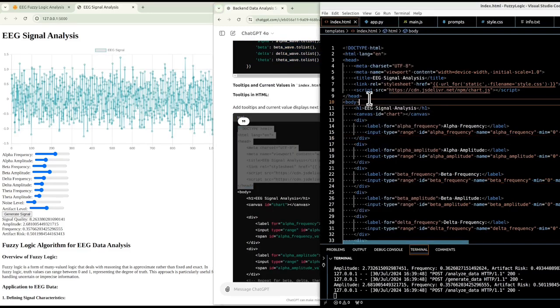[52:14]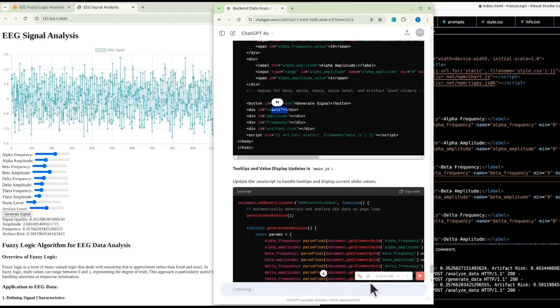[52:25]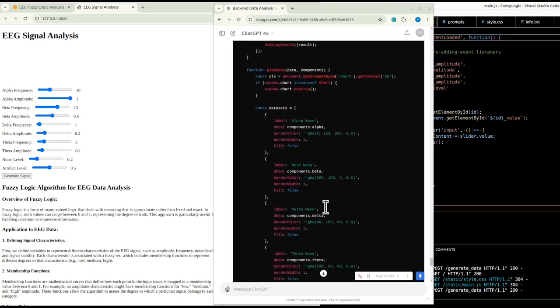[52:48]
Have to integrate. Okay, let's do the header, do the body. Actually, we're adding spans to the body. We might need to just generate the whole thing. Hey, can you actually generate the whole HTML code with all the necessary bits? So hopefully the JavaScript is complete. We're regenerating the HTML. Obviously the Python code is not the complete stuff, is it? It might be having trouble integrating.
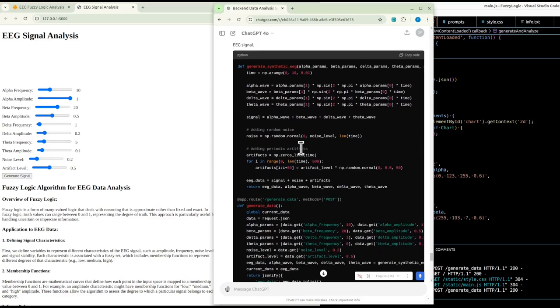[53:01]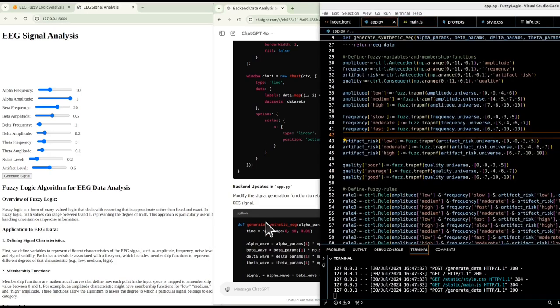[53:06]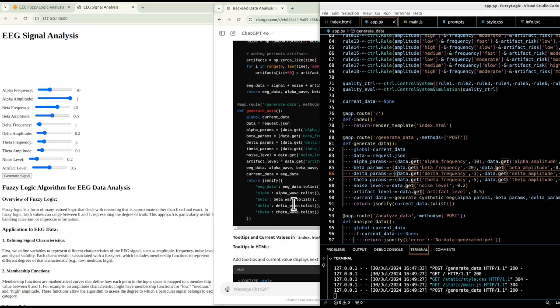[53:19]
JavaScript now has the tooltips. I can't see them actually, but I assume they're working. Fine. Now in the Python code, we can try it out. We have generate data, it's a POST. So what did we change? We're returning way more data. It might not be ideal. Let's comment that out for a sec.
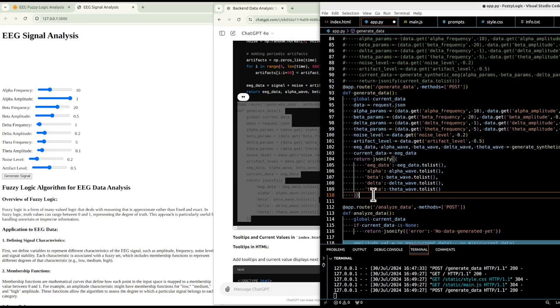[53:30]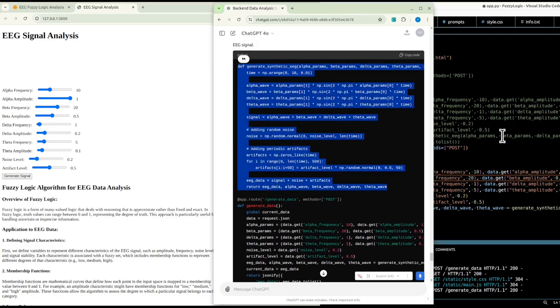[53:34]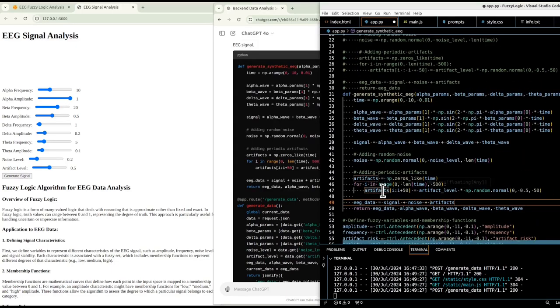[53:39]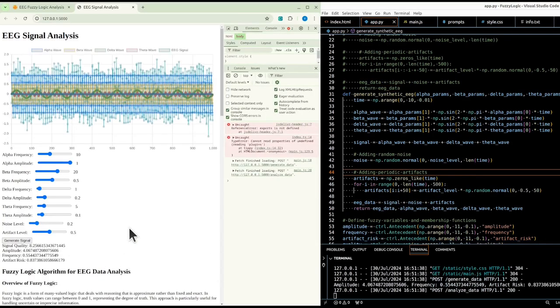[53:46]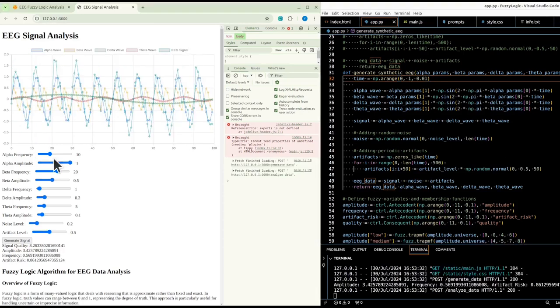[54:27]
And now we also have a different generate synthetic data EEG function. We only had EEG data before. Now we have the combined EEG data and each waveform separately as well. I had a feeling this would be messy. Let's reduce the amplitudes for a sec to make sure it's working okay. Could have fewer data points. Maybe we have the 1000. Can we just have 1 second? Kind of nice. I understand what we are trying to do, but it just looks so-so.
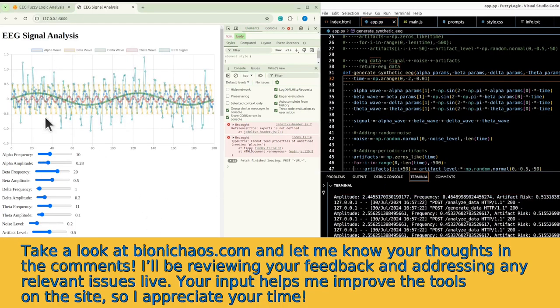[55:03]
And those are number of samples and not the time. Okay, let's try 2 seconds there. The EEG signal should be the overlay, the primary thing, and everything else should be in the background. This is actually taking a different direction.
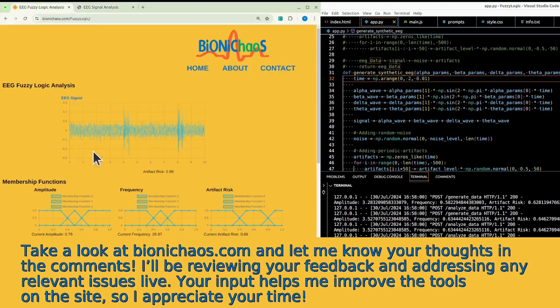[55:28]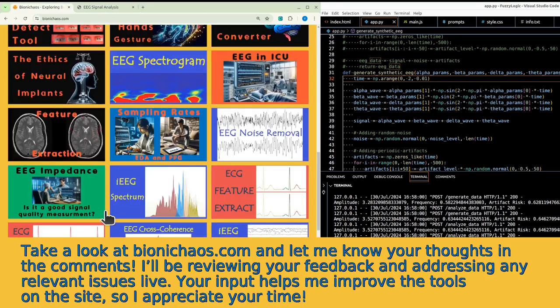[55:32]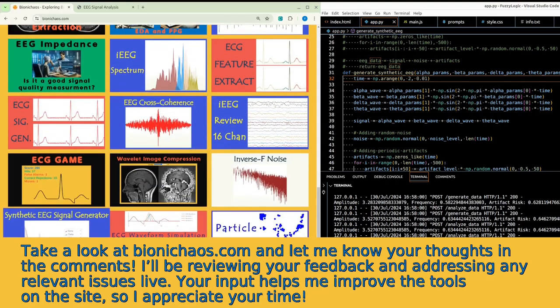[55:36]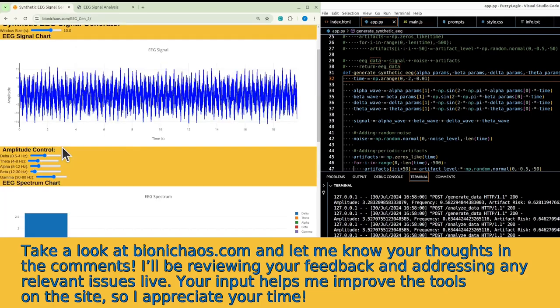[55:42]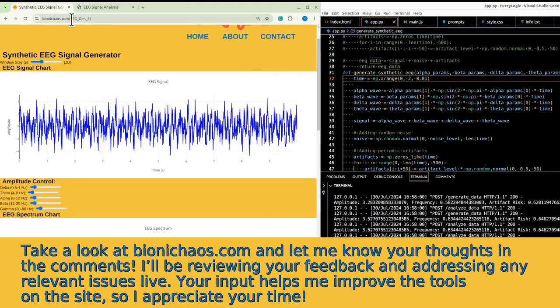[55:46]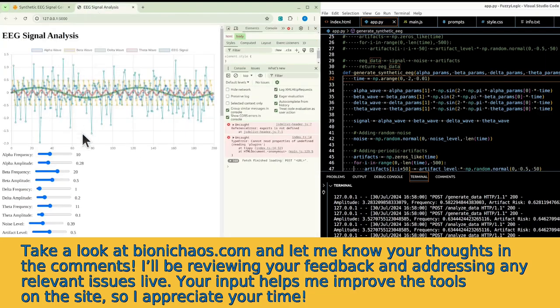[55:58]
We might split this into two separate tools, actually. One that shows the EEG generation, and the other one should just do the fuzzy logic business, because it's a whole separate story. Currently we have an EEG generator, but it's old and needs more love. We could update this one, but this one is up and running. You can use it already. We'll be leaving it as is, and we'll be having another more advanced option, one that has different features.
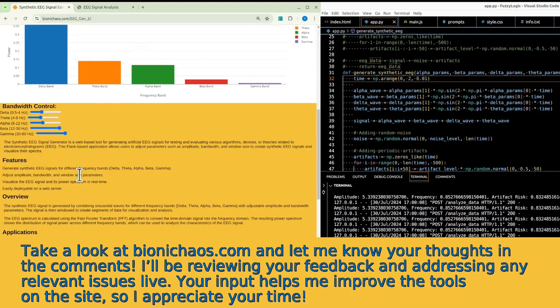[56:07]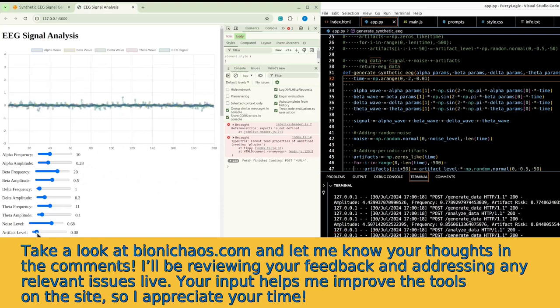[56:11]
One doesn't have selection for noise, which is unfortunate because the noise is there, so it could have been added fairly easily. The frequency could really be fixed. We could have the amplitudes on the left, frequencies on the right. The original idea. So that was an EMG artifact thing. Probably the amplitude should be normalized. We should be able to see the EMG in the beginning. There would be another one if the signal was long enough.
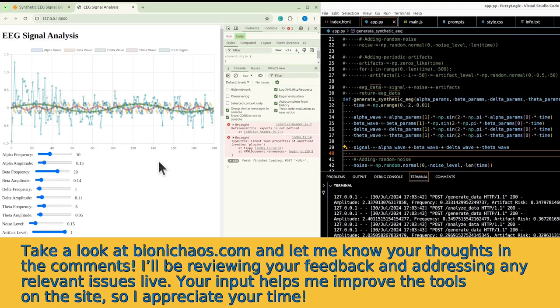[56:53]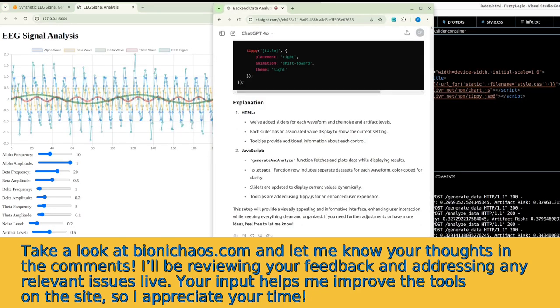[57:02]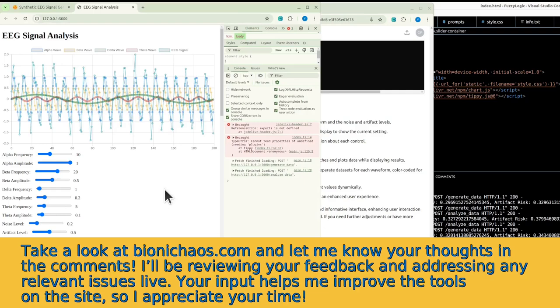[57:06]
The other question is whether this application, as it is at the moment, might be overloading the server. There might be too much happening there. First we have that error in the browser, some reference error, and then an undefined plugin. We'll have to fix that. It's only happening on page load, but then everything is still working fine. Now the other thing is, as you can tell from the image, there is too much going on in the chart. We do not like that.
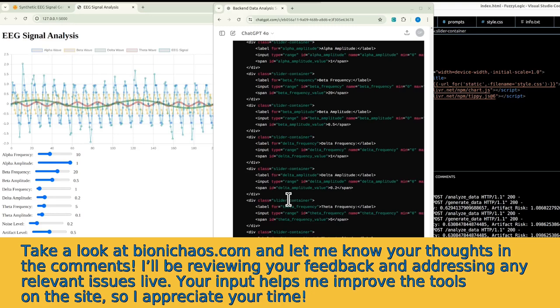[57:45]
It will be generating for a while. We might continue this tomorrow. Take a look at bionicchaos.com. Let me know what you think. I'll be reviewing your feedback and addressing any issues during the next live stream.
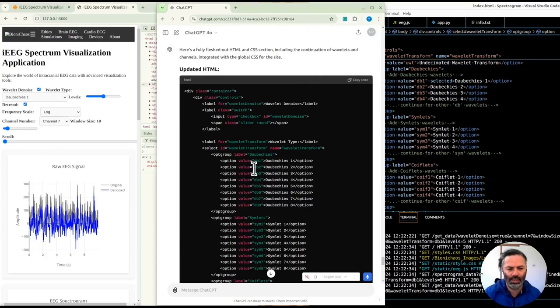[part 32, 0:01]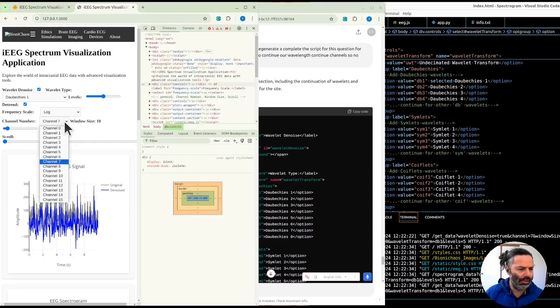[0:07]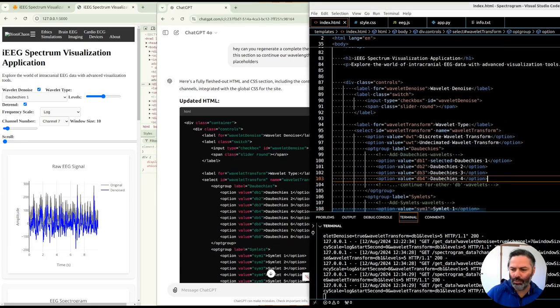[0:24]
So we're updating this HTML. Hopefully it didn't remove anything necessary from all the drop downs. Yeah, it's 16 channels. We have that many wavelet types that we can use. The wavelet denoising doesn't actually do much at the moment, but we'll probably check it in another tool. We're just rearranging the HTML, the different sections in it.
Let's see, so we have a main container. Yeah, it's starting from here, going all the way. What just happened? Yeah, plots. Should include plots and everything. Oh, come on. It's something jumpy. Something is jumpy. That will be the next section. It's currently 208 lines.
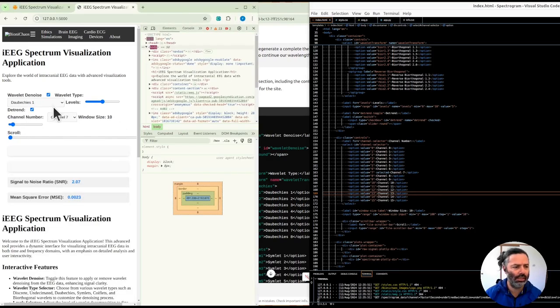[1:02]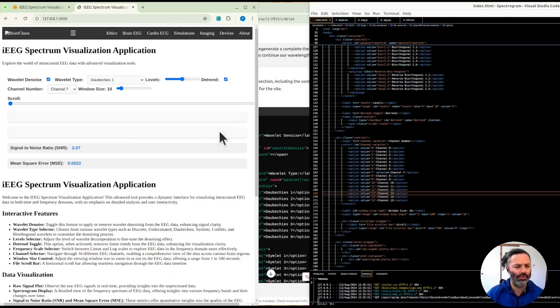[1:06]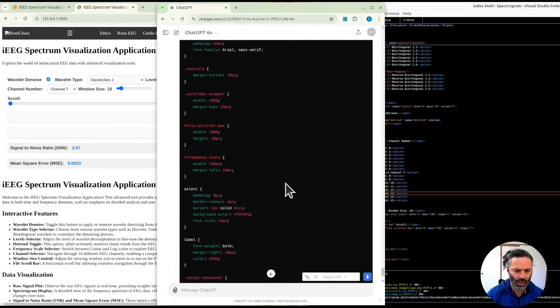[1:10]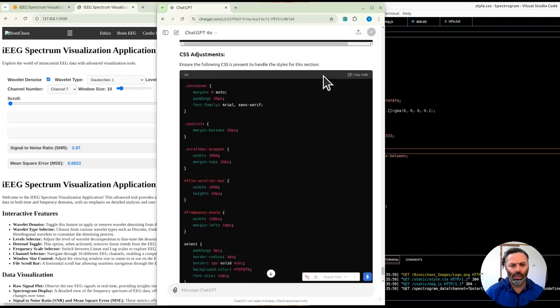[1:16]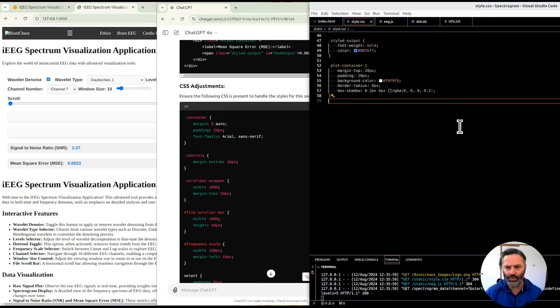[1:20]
Let's test it. Okay, the scroll is still outside the boundary of the page. Why? Okay, I have to check the styling as well. Yeah, we're definitely not doing the navigation bar and styling in here. We have the HTML for this. Okay, it's looking better, but where are the charts?
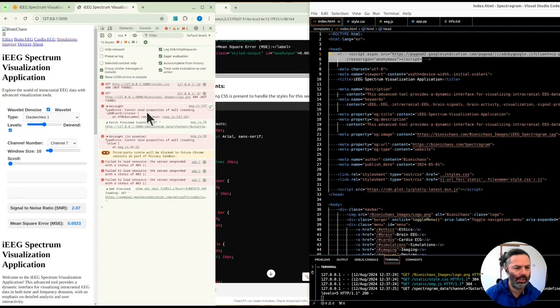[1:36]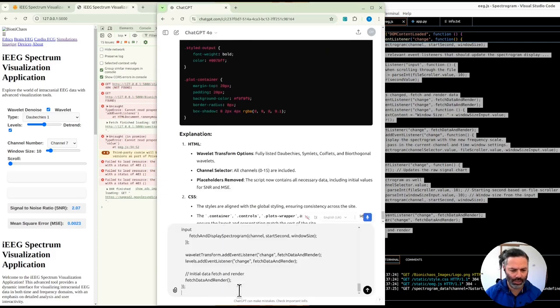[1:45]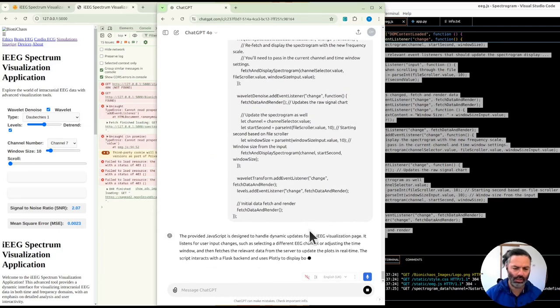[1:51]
Did I just have charts a second ago? The charts are missing. Event listener. So there's a JavaScript. Well, right, because we changed. What if we just pop the JavaScript code? It should, in theory. No, it did not.
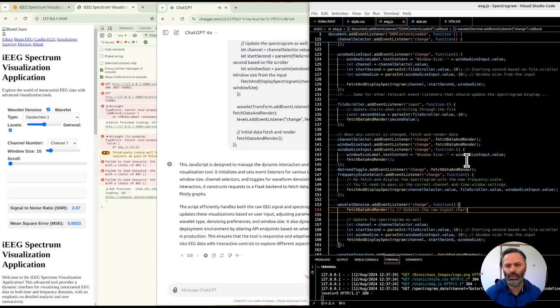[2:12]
Yeah, sometimes I find the GPT-4, the legacy model, is performing a bit better. Now it's generating very slowly. It's not a good sign. Now it's a bit faster. And let's read this quickly. This JavaScript is designed to manage the dynamic interaction and data fetching for an EEG data visualization tool.
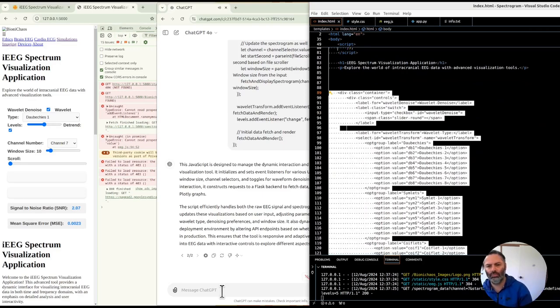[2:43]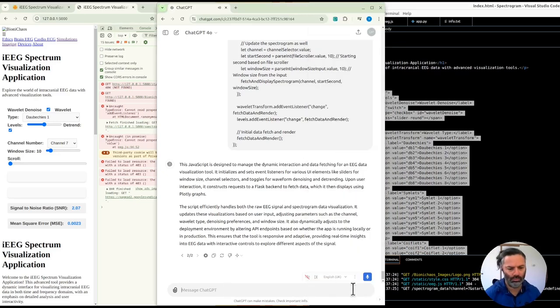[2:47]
It initializes and sets event listeners for various UI elements, like sliders for window size, channel selectors, and toggles for waveform denoising and detrending. Upon user interaction, it constructs requests to a Flask backend to fetch data, which it then displays using Plotly graphs. The script efficiently handles both the raw EEG signal and spectrogram data visualization. It updates these visualizations based on user input, adjusting parameters such as the channel, wavelet type, denoising preferences, and window size. It also dynamically adjusts to the deployment environment by altering API endpoints based on whether the app is running locally or in production. This ensures that the tool is responsive and adaptive, providing real-time insights into EEG data with interactive controls to explore different aspects of the signal.
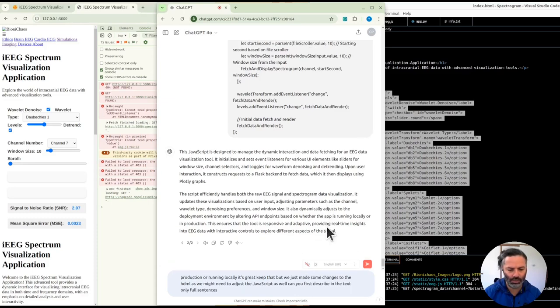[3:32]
Yeah, so checking if in production or running locally is great. Keep that. But we just made some changes to the HTML. So we might need to adjust the JavaScript as well. Can you first describe in text only, full sentences, continuous paragraphs? About the code, forgot to mention.
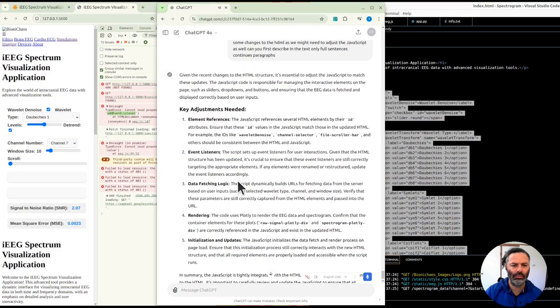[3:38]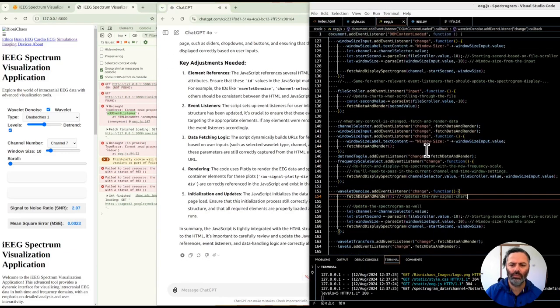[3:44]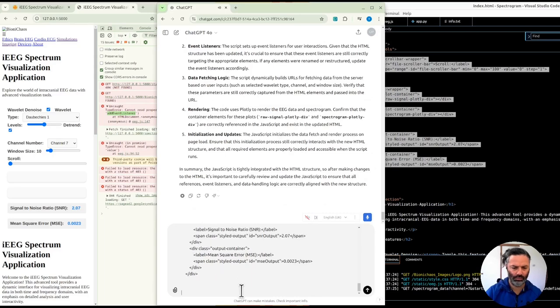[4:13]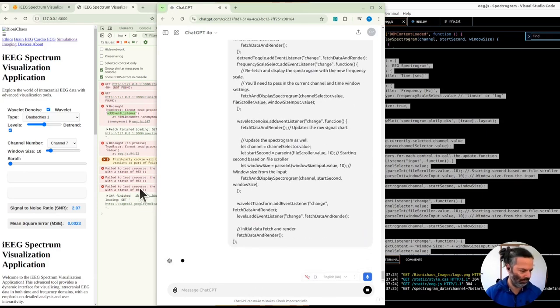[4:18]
Given the recent changes to the HTML structure, it's essential to adjust the JavaScript to match these updates. The JavaScript code is responsible for managing the interactive elements on the page, such as sliders, dropdowns, and buttons, and ensuring that the EEG data is fetched and displayed correctly based on user inputs. Key adjustments needed. 1. Element references. The JavaScript references several HTML elements by their ID attributes. Ensure that these ID values in the JavaScript match those in the updated HTML. For example, the IDs like wavelet denoise, channel selector, file scroller bar, and others should be consistent between the HTML and JavaScript. 2. Event listeners.
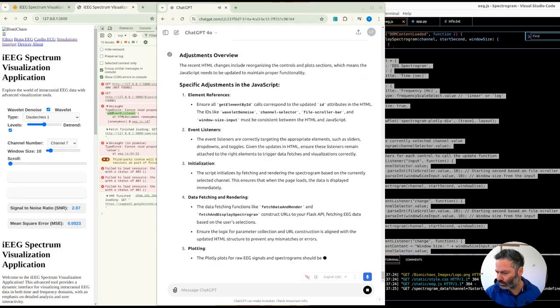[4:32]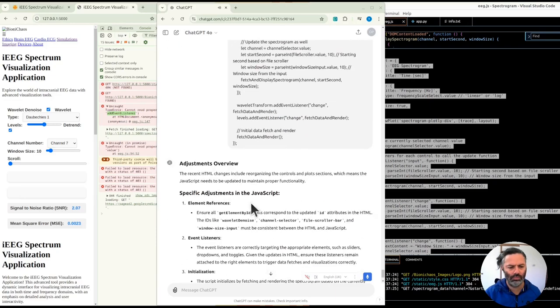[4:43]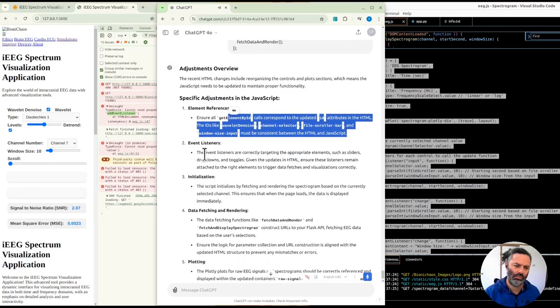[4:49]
The script sets up event listeners for user interactions. Given that the HTML structure has been updated, it's crucial to ensure that these event listeners are still correctly targeting the appropriate elements. If any elements were renamed or restructured, update the event listeners accordingly. 3. Data fetching logic. The script dynamically builds URLs for fetching data from the server based on user inputs, such as selected wavelet type, channel, and window size. Verify that these parameters are still correctly captured from the HTML elements and passed into the URL.
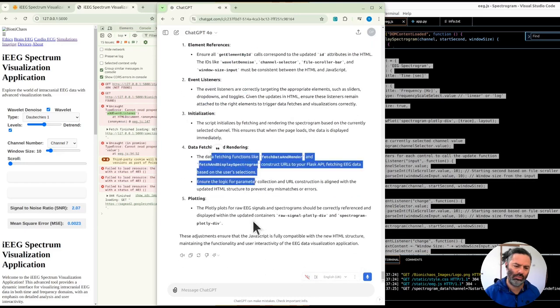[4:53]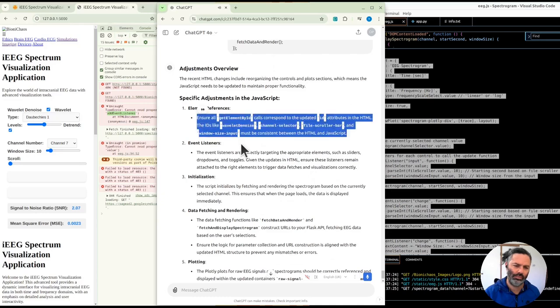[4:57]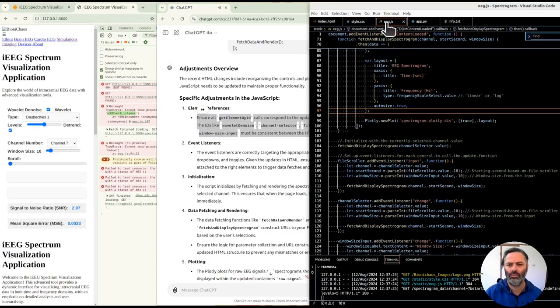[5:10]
4. Rendering. The code uses Plotly to render the EEG data and spectrogram. Confirm that the container elements for these plots, raw signal plotly div and spectrogram plotly div, are correctly referenced in the JavaScript and exist in the updated HTML. 5. Initialization and updates. The JavaScript initializes the data fetch and render process on page load. Ensure that this initialization process still correctly interacts with the new HTML structure, and that all required elements are properly loaded and accessible when the script runs. In summary, the JavaScript is tightly integrated with the HTML structure. So after making changes to the HTML, it's important to carefully review and update the JavaScript to ensure that all references, event listeners, and data handling logic are correctly aligned with the new structure.
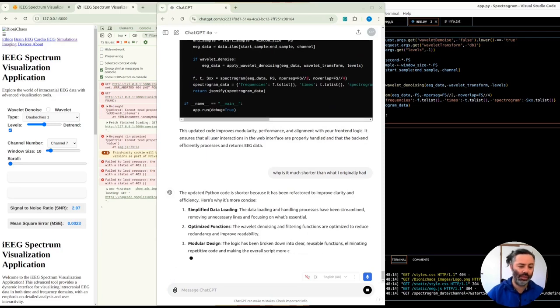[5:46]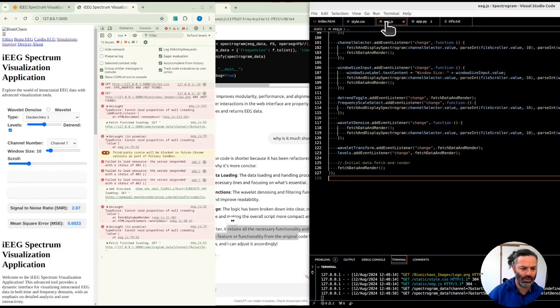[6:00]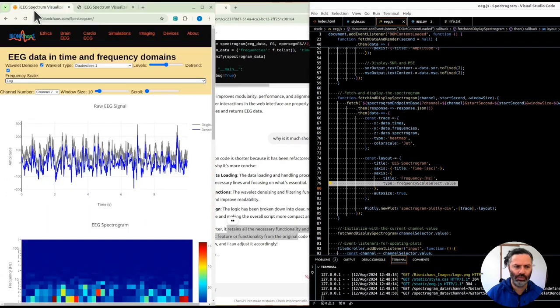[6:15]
We'll ask it to, I don't know why it is much shorter than we had it before, simplified, optimized, modular. It swears it retains all the functionality. I'm still not seeing the charts. We have a problem actually loading the data. So when I'm trying to scroll the JavaScript, line 79 isn't right, to remove a bunch of stuff.
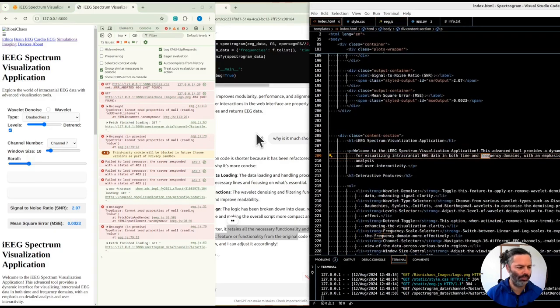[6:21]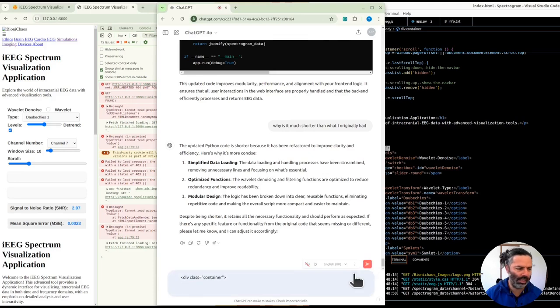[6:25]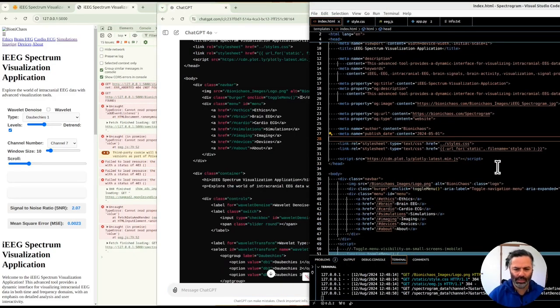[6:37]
Trend frequency scale. Where's the frequency scale? Got rid of it. Forgot the frequency scale. Hey, can we generate this HTML script again from scratch? Maybe. Navigation bar and everything, but it's not what we are after.
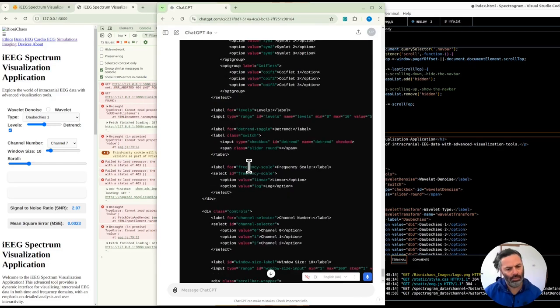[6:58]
It's choosing to put the, and that's probably okay. Didn't bring the frequency. Yes, it's doing funny business. Ah, did bring frequency scale back. But that's not complete. I wonder, does it?
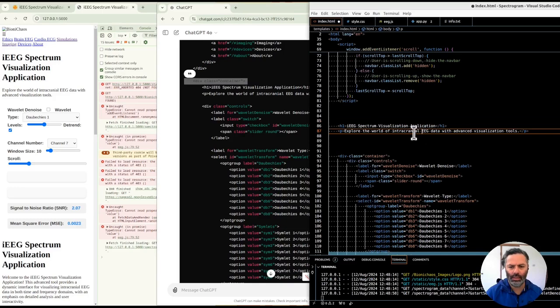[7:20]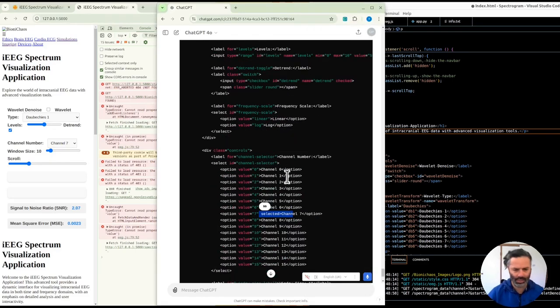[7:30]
Hey, did you realize there are placeholders? Can we generate the whole thing and not forget any element? Can you do that? Looks a bit better. So in this class container business, we have two sets of controls. That's okay. Plot wrapper. Channel 7 selected by default.
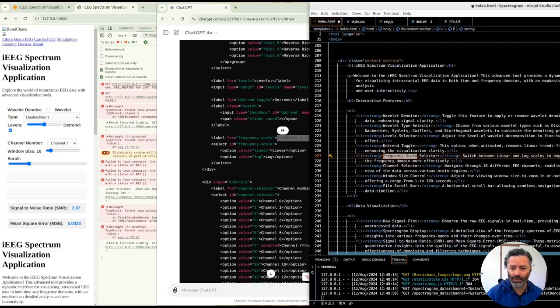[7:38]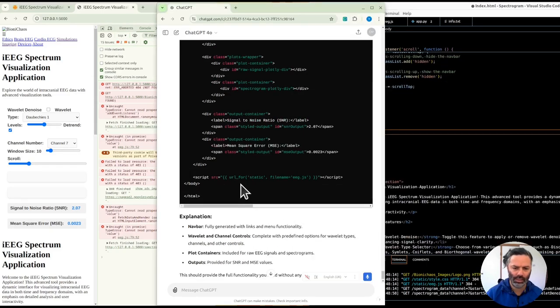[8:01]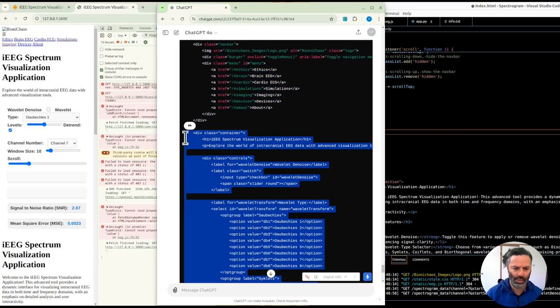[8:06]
That's fine. And frequency scale is back, which is good because in a previous response, it just decided to get rid of it. And that's not nice, is it? And we have the EEG JavaScript going on. That could be up there instead of where the description is. So content is fine, but not taking the whole HTML. Just taking this container. Now the log one should be selected by default.
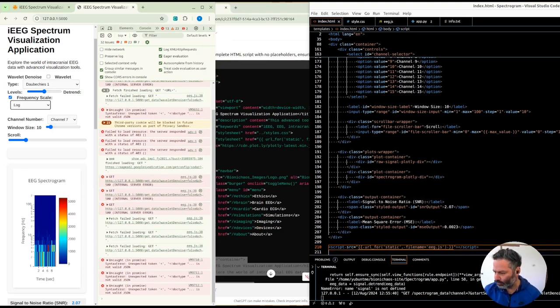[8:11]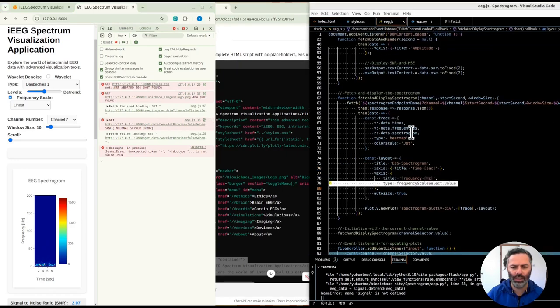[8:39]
Can see what the problem might be. Got a bunch of errors. Let's remove this script as well. It's the problem removing stuff in HTML. It's not fun at all. And we don't care about the logo. Did it get rid of the local? No, it's still there. So why is this?
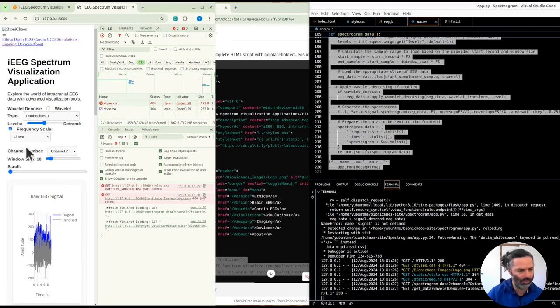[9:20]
It's not able to get the data. We actually want to change it so that the data is available in the front end all the time, so we can actually store it. What's happening here? That's obviously to do with a recent change. We're getting 500 get data. The API essentially doesn't work. Well, now it does.
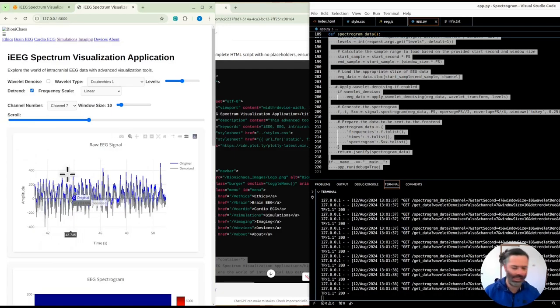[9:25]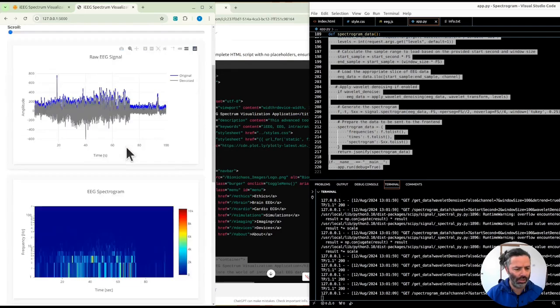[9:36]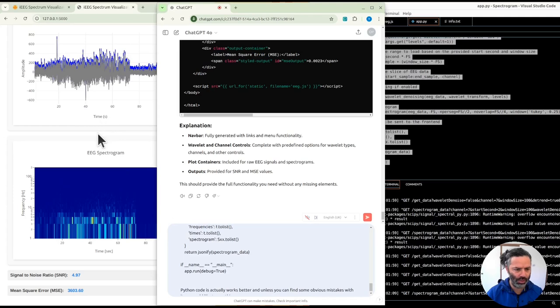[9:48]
We have the whole thing. But it keeps sending data back and forth, which is not ideal. We want to change that, because it's becoming quite heavy. When this log by default. This Python code actually works better. Unless you can find some obvious mistakes with it, we would like to use this one. What you generated last didn't actually load the data properly.
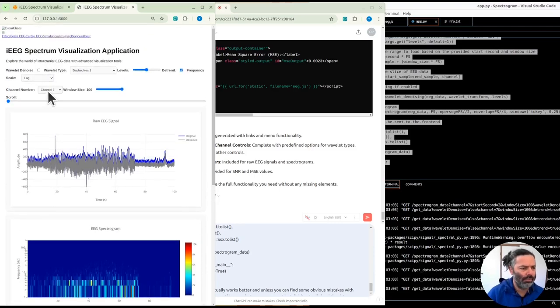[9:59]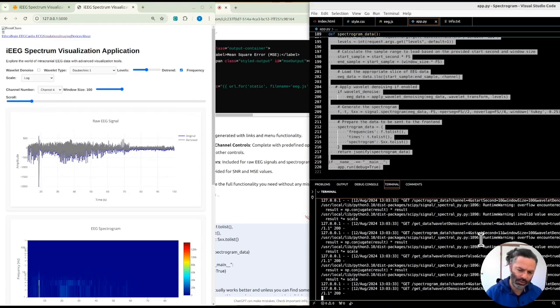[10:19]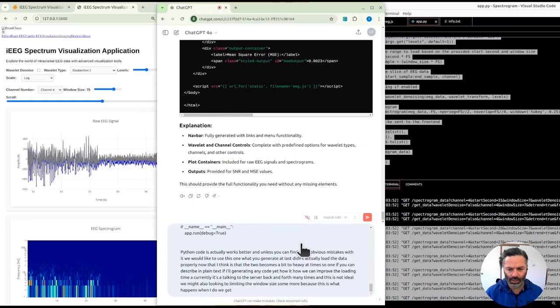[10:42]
Now I think the tool becomes a bit too heavy at times. So I wonder if you can describe in plain text, without generating any code yet, how we can improve the loading time. Currently it's talking to the server back and forth many times, but this is not ideal. We might also look into limiting the window size some more, because this is what happens when I do, we get the following in the terminal. So maybe we can improve this somehow.
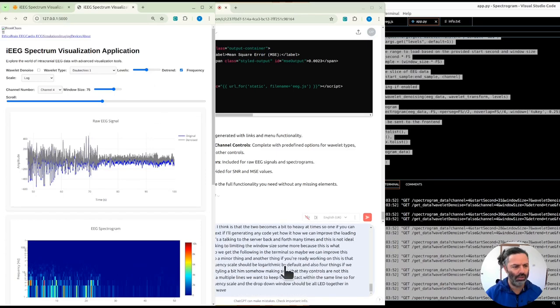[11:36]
And also a minor thing, if we're already working on this, is that the frequency scale should be logarithmic by default. And also a fourth thing, if we can improve the styling a bit, somehow making sure that the controls are not spread over multiple lines. We want to keep them intact within the same line. So for example, the frequency scale and the drop-down window should just be all together in one line. Same with scroll, the text and the scroller should be in one line as well.
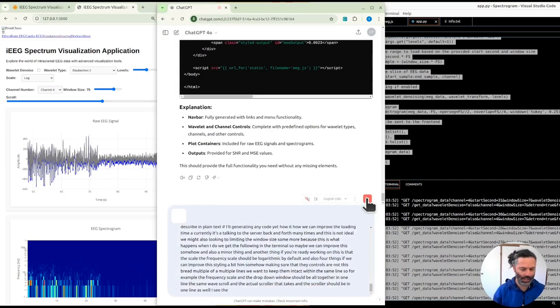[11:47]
See the image attached and first generate a plain text, full sentences, complete paragraphs about how you're going to improve the code, and then we will generate the code in the next prompt.
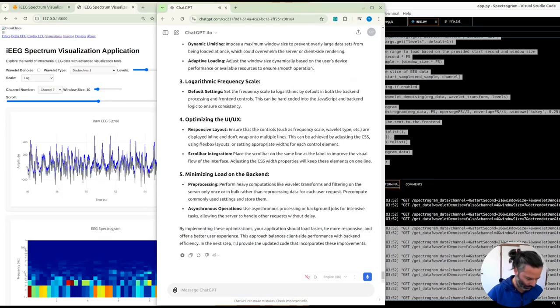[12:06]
To improve the loading time and overall performance of your Flask-based EEG visualization application, we can implement several key optimizations. 1. Reduce server-client communication. Data preloading: load and pre-process the data in larger chunks on the server side, so the client doesn't need to request data as frequently. Batch data requests: instead of fetching data every time the user interacts with controls, consider loading the entire dataset or a significant portion up front. The client can then handle local rendering based on user interactions. Caching: use caching mechanisms to store frequently accessed data on the server side to avoid redundant computations.
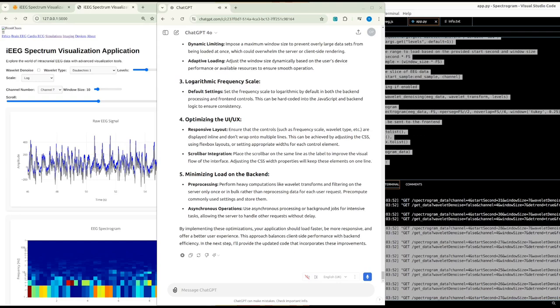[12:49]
2. Limit window size. Dynamic limiting: impose a maximum window size to prevent overly large datasets from being loaded at once, which could overwhelm the server or client-side rendering. Adaptive loading: adjust the window size dynamically based on the user's device performance or available resources to ensure smooth operation. 3. Logarithmic frequency scale. Default settings: set the frequency scale to logarithmic by default in both the back-end processing and front-end controls. This can be hard-coded into the JavaScript and back-end logic to ensure consistency. 4. Optimizing the UI/UX. Responsive layout: ensure that the controls, such as frequency scale, wavelet type, etc., are displayed in line and don't wrap onto multiple lines. This can be achieved by adjusting the CSS, using flexbox layouts, or setting appropriate widths for each control element.
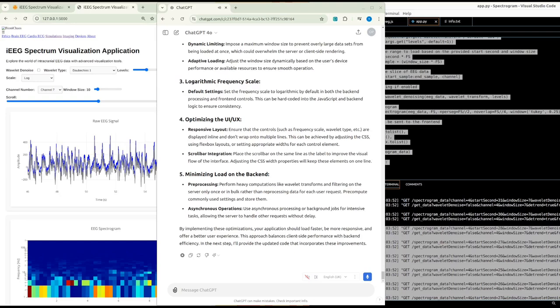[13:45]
Scroll bar integration. Place the scroll bar on the same line as the label to improve the visual flow of the interface. Adjusting the CSS width properties will keep these elements on one line. 5. Minimizing load on the back end. Pre-processing. Perform heavy computations like wavelet transforms and filtering on the server only once or in bulk, rather than reprocessing data for each user request.
Pre-compute commonly used settings and store them. Asynchronous operations. Use asynchronous processing or background jobs for intensive tasks, allowing the server to handle other requests without delay. By implementing these optimizations, your application should load faster, be more responsive, and offer a better user experience. This approach balances client-side performance with back-end efficiency. In the next step, I'll provide the updated code that incorporates these improvements.
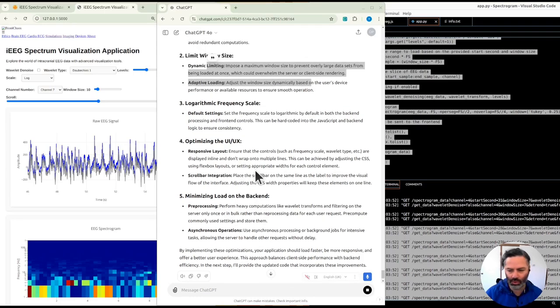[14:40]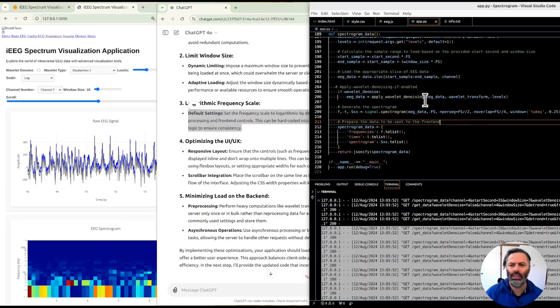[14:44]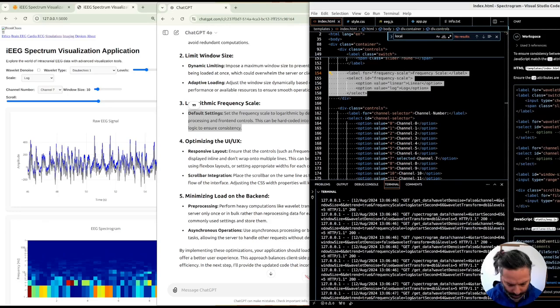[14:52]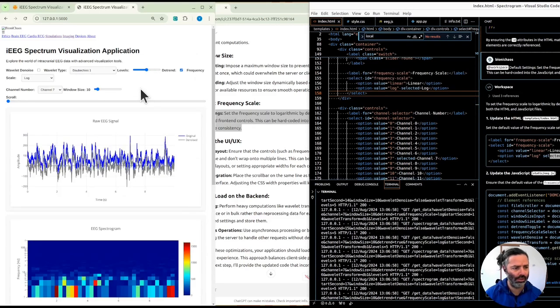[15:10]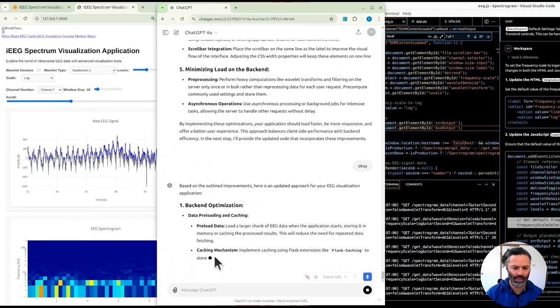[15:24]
So we're paying for GitHub Copilot, so we might as well use it. The default frequency scale can be changed by, we'll do a workspace handle. Use the prompt from GPT-4. Okay, so it's changed both. Yeah, with that handle, it's changing both JavaScript and HTML, which is great. Yes, so this is already working. But then we change the JavaScript as well. Adding this line, we have frequency as default. And I think that actually stuck GPT-4. Yeah, 4 Omni, whatever, 4o should be better.
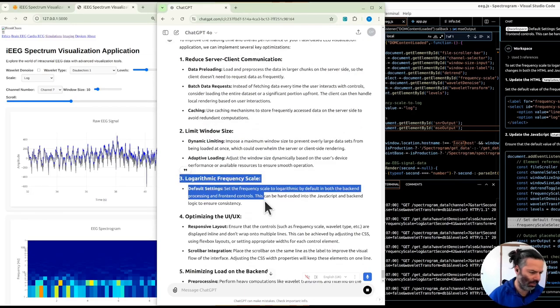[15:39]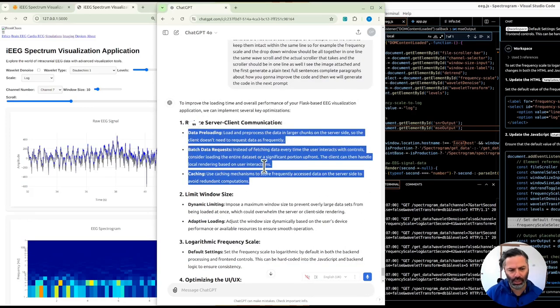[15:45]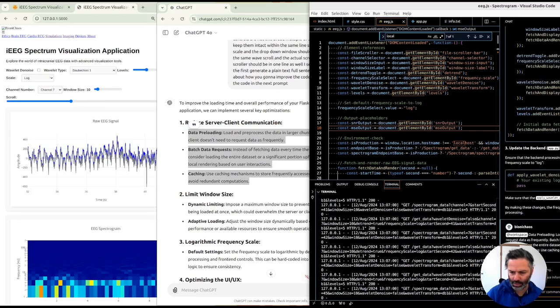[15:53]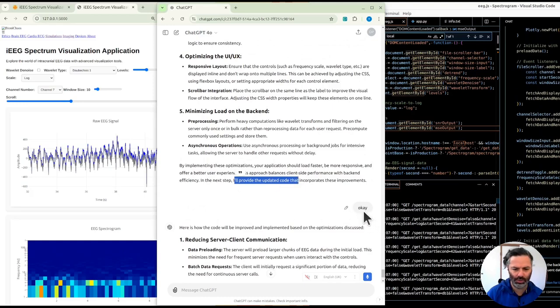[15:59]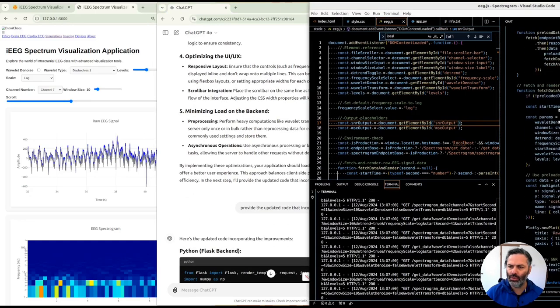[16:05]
So let's try regenerating. But what else can we do with GitHub Copilot? Yeah, we can ask about preloading data again with the workspace handle. See what it says. It said it will provide the updated code. It seemed to like forgot about it. And we got some suggestions from Copilot. That's a lot. Batch data request, that caching mechanism. Need to make changes to both backend and frontend.
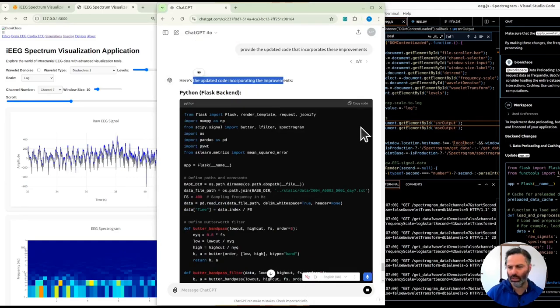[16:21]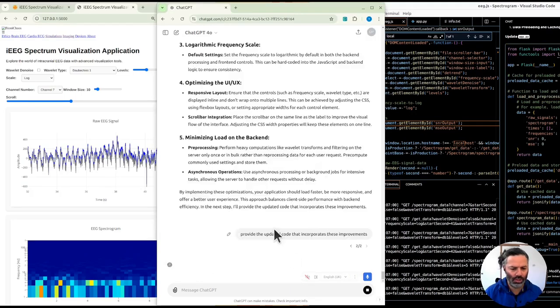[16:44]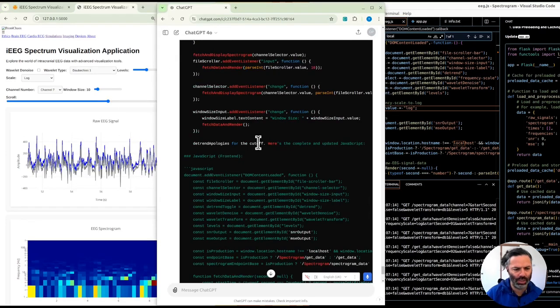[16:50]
Okay, this is not what GPT, like the newest model, is suggesting. So assuming this is not actually being accessed, preloaded cache, it's not using that function. Yeah, don't trust Copilot that much. But what changes did you actually make? We did improvement in the layout. Yeah, the code looks weird. There's something wrong with the JavaScript, isn't it? Yeah, checking if production not that good.
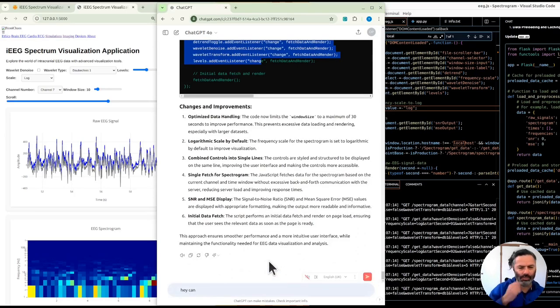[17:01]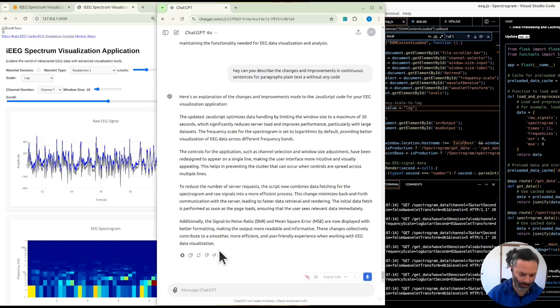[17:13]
Hey, can you describe the changes and improvements in continuous sentences, full paragraphs, plain text, without any code? Here's an explanation of the changes and improvements made to the JavaScript code for your EEG visualization application. The updated JavaScript optimizes data handling by limiting the window size to a maximum of 30 seconds, which significantly reduces server load and improves performance, particularly with large datasets. The frequency scale for the spectrogram is set to logarithmic by default, providing better visualization of EEG data across different frequency bands. The controls for the application, such as channel selection and window size adjustment, have been redesigned to appear on a single line, making the user interface more intuitive and visually appealing. This helps in preventing the clutter that can occur when controls are spread across multiple lines.
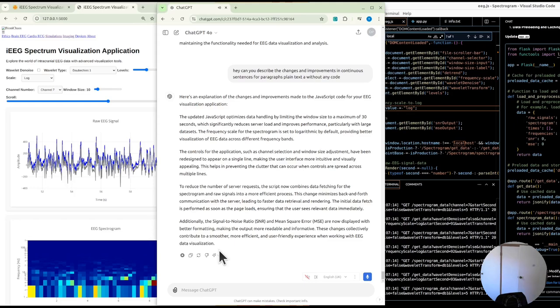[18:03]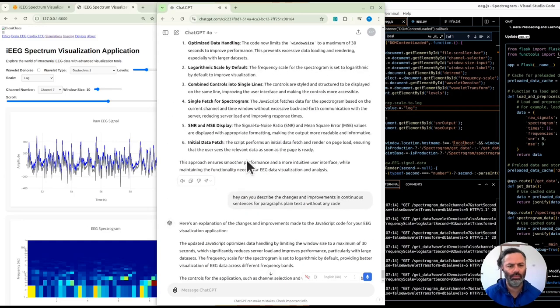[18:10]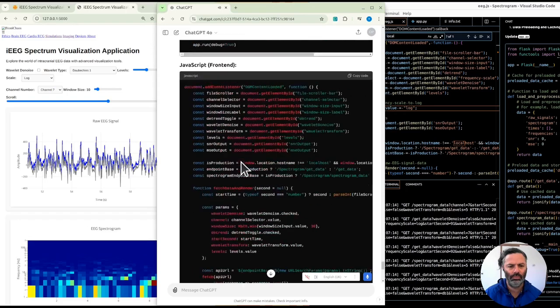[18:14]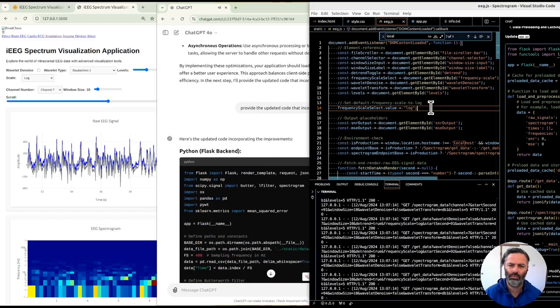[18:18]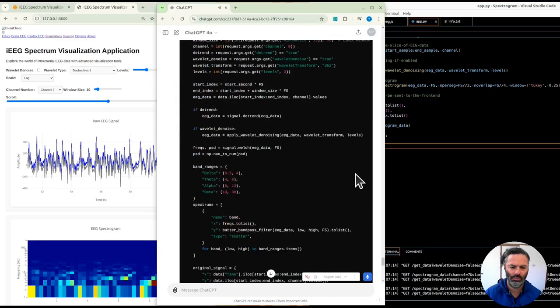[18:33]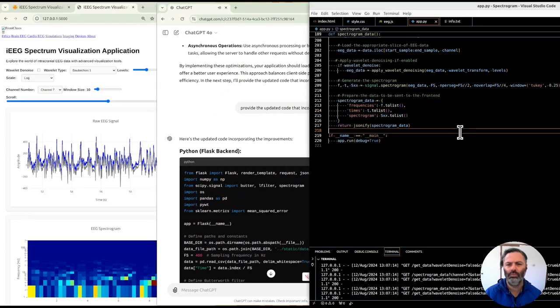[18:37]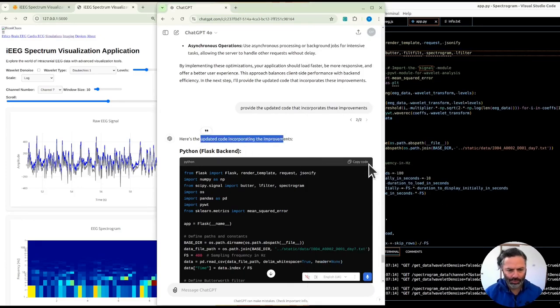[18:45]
To reduce the number of server requests, the script now combines data fetching for the spectrogram and raw signals into a more efficient process. This change minimizes back and forth communication with the server, leading to faster data retrieval and rendering. The initial data fetch is performed as soon as the page loads, ensuring that the user sees relevant data immediately. Additionally, the signal-to-noise ratio, SNR, and mean square error, MSE, are now displayed with better formatting, making the output more readable and informative. These changes collectively contribute to a smoother, more efficient, and user-friendly experience when working with EEG data visualization. Yeah, there's a problem with the new code.
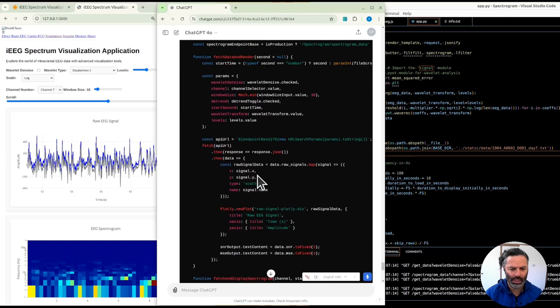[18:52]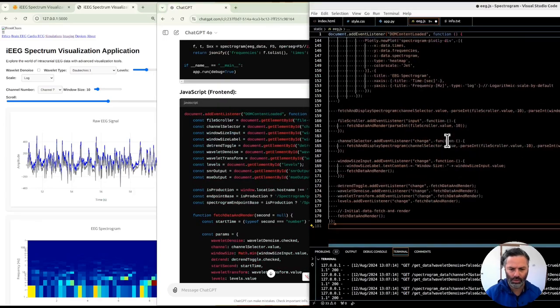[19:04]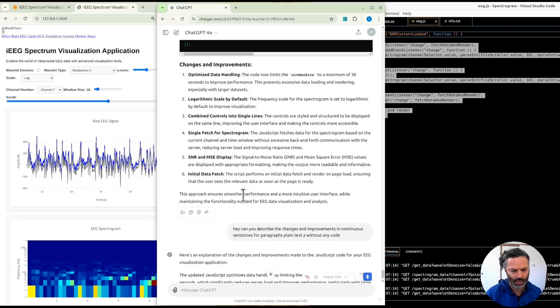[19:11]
So why? It seemed to be forgetting stuff. It didn't forget to check if we're executing locally or in production in JavaScript, so that's good. And the JavaScript as well. Well, obviously there's something wrong with it. Let's try regenerating that. I got a limit. I got a timeout on the legacy model, like 9 minutes, a whopping 9 minutes.
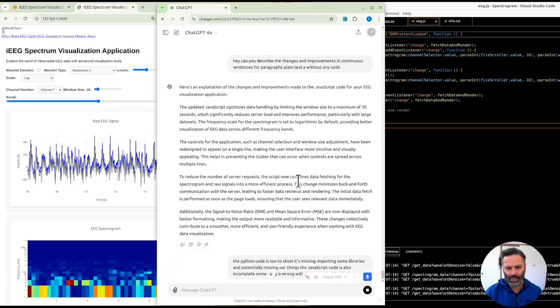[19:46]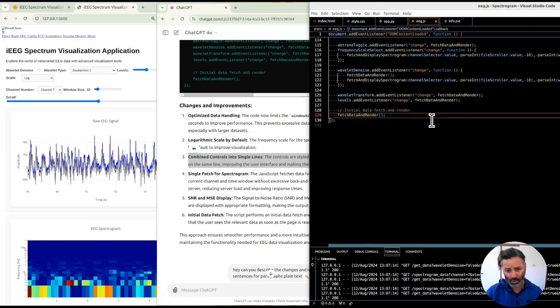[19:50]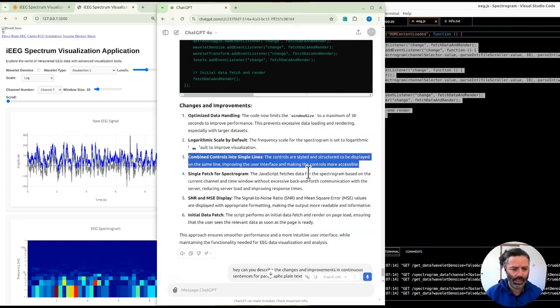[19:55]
Okay, the Python code seemed to be too short. It's missing importing some libraries and potentially missing other things. The JavaScript code is also incomplete. Something is wrong with it. Can you double check? Yeah, I might just use, we'll keep using GitHub Copilot. The code that we currently have.
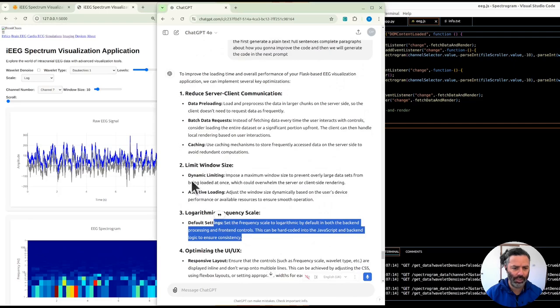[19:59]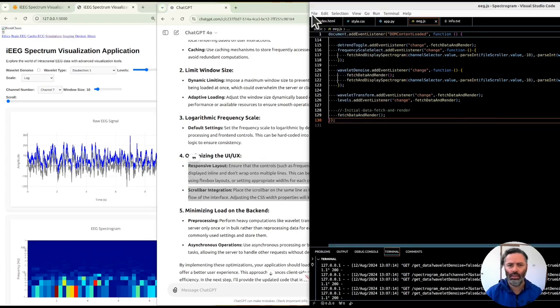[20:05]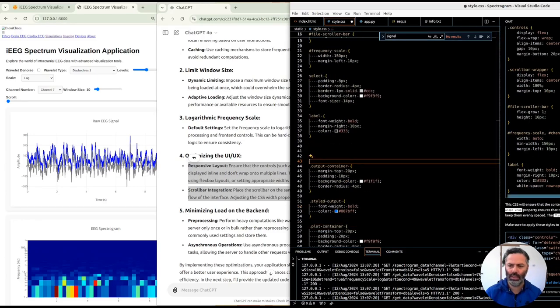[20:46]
And let's go create next frequency limit, window size, data preloading. Yeah, this just can be when the HTML is. And start a new Copilot session. We need to select workspace function. I wish there was an option just to always use it, because that's the one that supposedly, allegedly allows you to look at all the files that are currently open. So change something in the CSS controls flex. Okay, control scroller wrapper. Well, label, split it up, or just integrate.
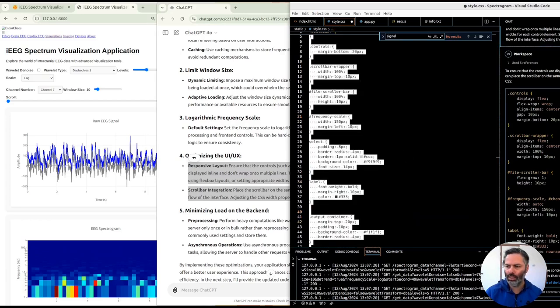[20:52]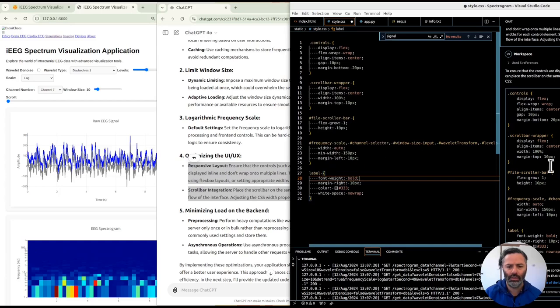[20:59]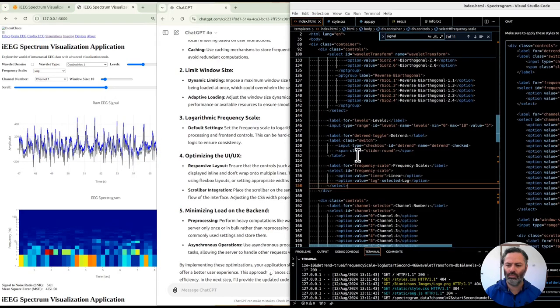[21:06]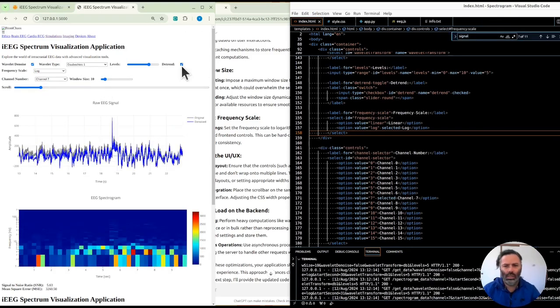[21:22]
Wait, let's just use the big apply buttons, because it should keep what we already got. And no, it did not. Well, it actually did the job. So why has it generated JavaScript? I didn't ask for it. Nah, that should be fine. But we change the styling. It is better. Okay, wavelet.
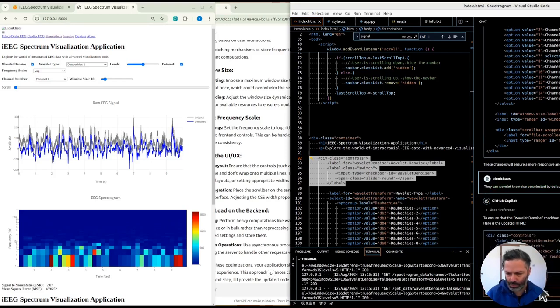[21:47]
The noise should have been selected by default as well. Can wavelet denoise be selected by default as well? Yeah, so this is the interesting bit. If you do the same prompt, okay, that's even made a mistake. But if you do the same prompt with a workspace, wavelet denoise is selected by default, it should also change the JavaScript in theory. No, it doesn't. A checkbox, wavelet denoise checked, that should work.
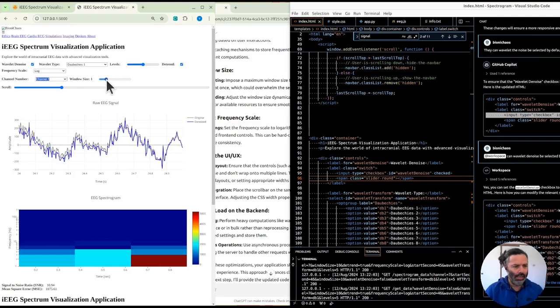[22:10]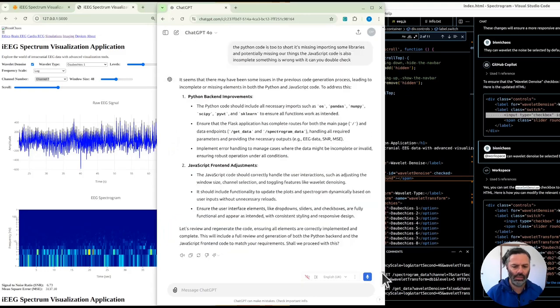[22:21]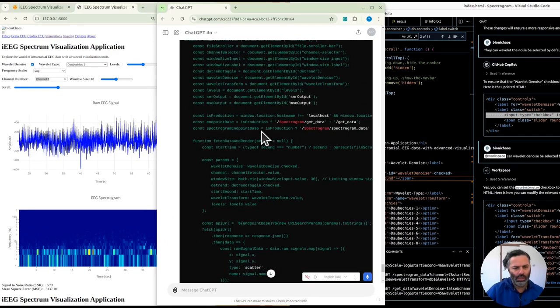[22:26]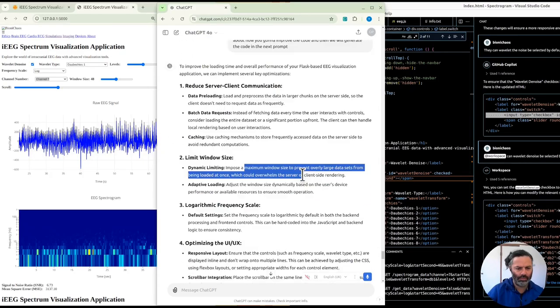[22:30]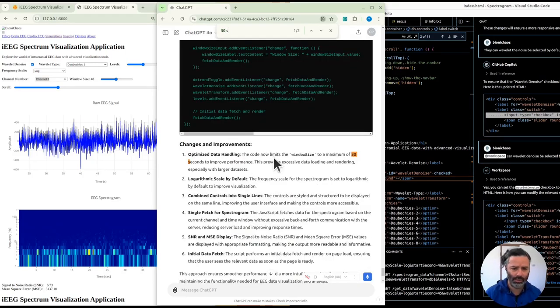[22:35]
Yeah, we probably want to do a minimum. Yeah, well, minimum of 1 second works well. Yeah, we'll do a maximum of 30 seconds. It's refusing to code, being a bit lazy. That's why we're using GitHub Copilot instead of... where do we have 30 seconds? Window size, improve performance, prevent excessive data loading and rendering.
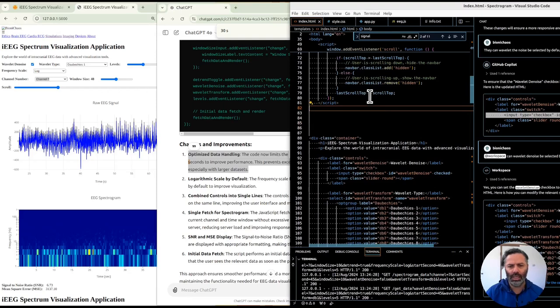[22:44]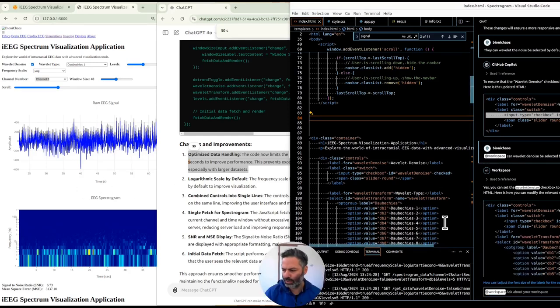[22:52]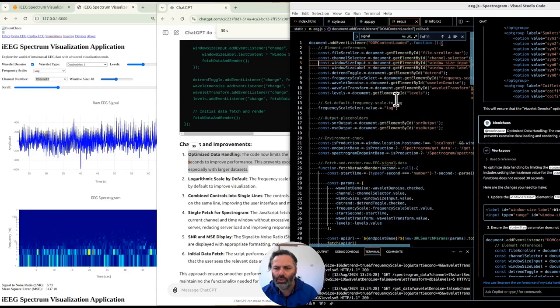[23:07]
That would be nice. Again, let's do it with the workspace. We got a good prompt from ChatGPT. Didn't just say 30 seconds. Ah, it did do it. It's always tempting to blame the bot, and it's modifying. Yeah, don't quite understand how these links actually work. They don't really work.
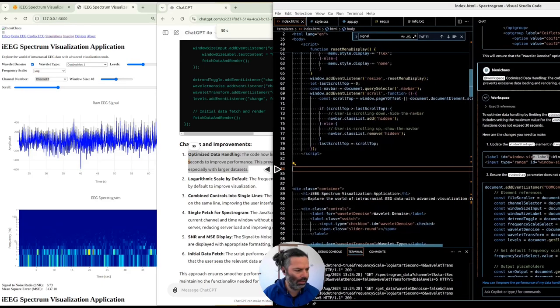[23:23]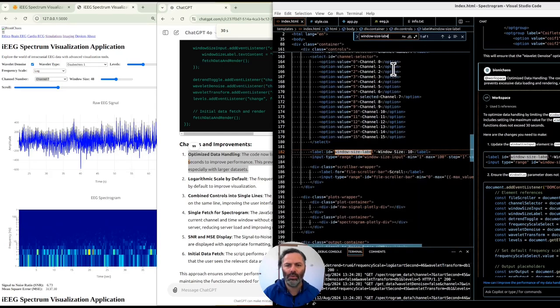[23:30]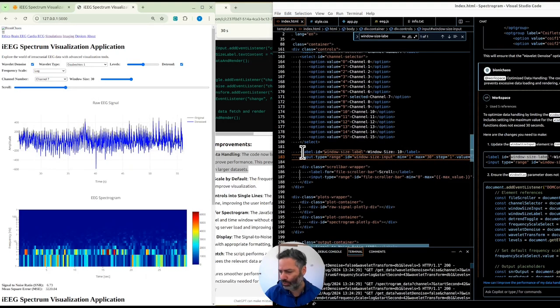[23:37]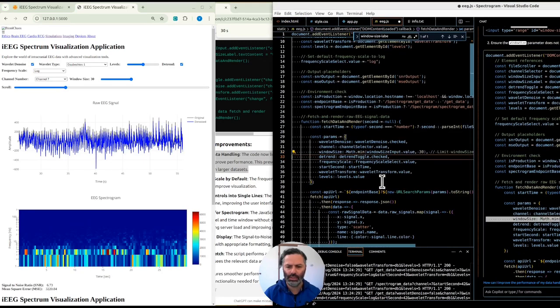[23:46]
We are modifying the window size label to have the maximum value of 30. This should reduce some load. I can still hear the CPU, GPU going, all the fans going. Size limit done, but no other changes are there. Control F5 it.
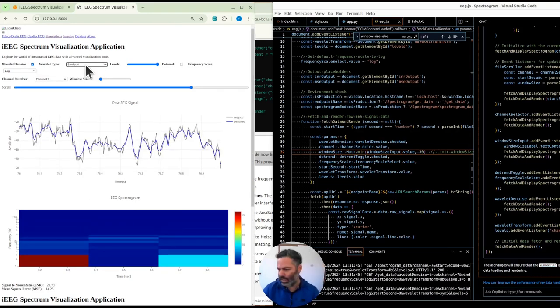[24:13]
You can select, I think they will be only visible. Yes, yeah, so we have the denoising functionality within the same tool. You can select your wavelet type and see what difference it makes. You can even overlay. Yes, so you can see what the different wavelet types are doing. You can overlay by using the trend. The result here is for the denoised stuff. So when you untick this, you only get the one.
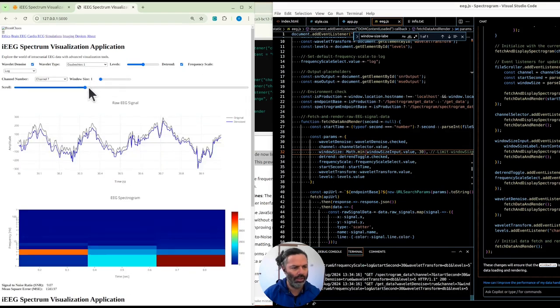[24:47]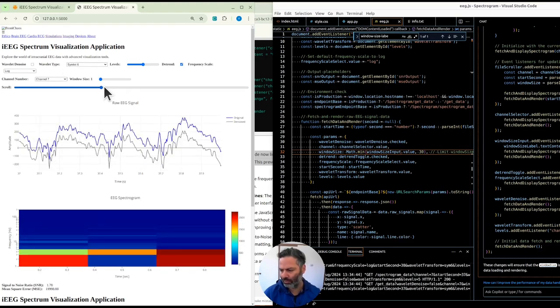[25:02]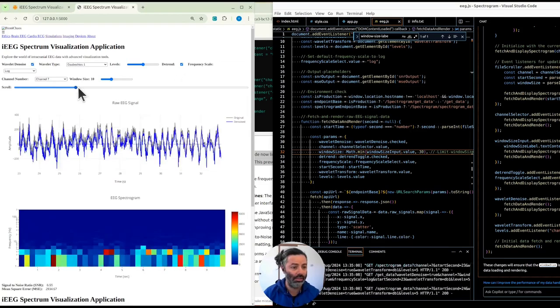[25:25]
What just happened? Let's clear terminal. There's a bug. Bug alert. So what's up? Would we even be able to reproduce? Yes, we are able. Okay, that's weird. I can't even describe it. I wish GPT had a video thingy, then you could just record the video of the error, and then hopefully it will be able to tell you how to fix it. At the moment, I can't even describe what's going on.
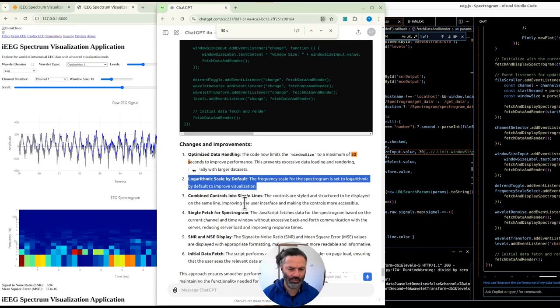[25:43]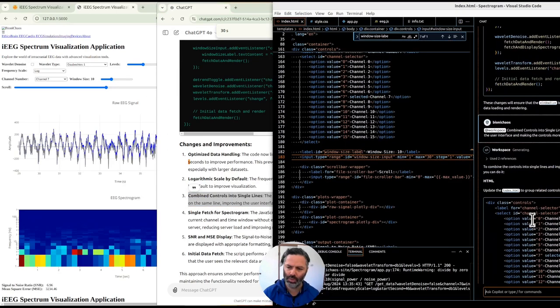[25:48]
Essentially, yes, if you remove wavelet denoise and detrending, that's interesting. So I have logarithmic scale default, combine controls into single lines. We did that, did we? To combine controls into single lines and improve the user interface. You can adjust the HTML. Okay, but you're not actually doing anything to the HTML, do you? Yeah, using no wrap.
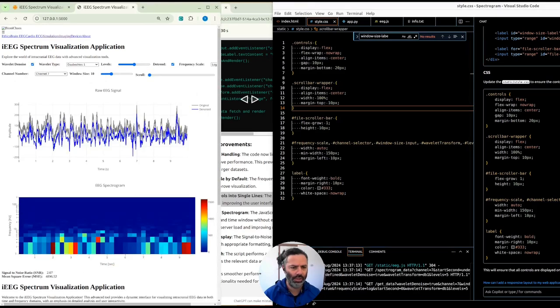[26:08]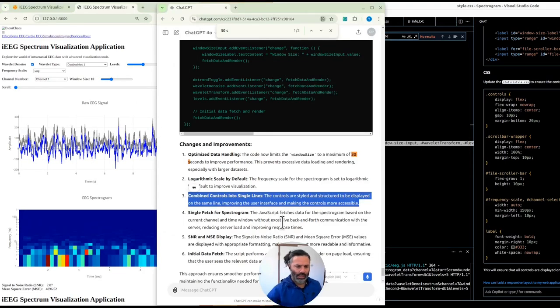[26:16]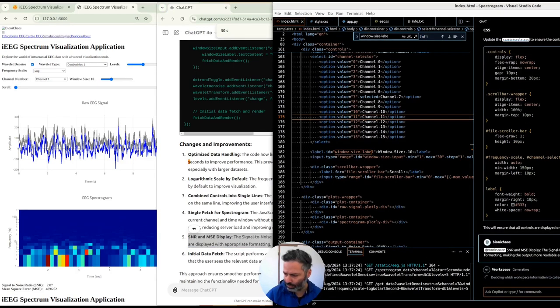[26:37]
Let's integrate. This is new for Copilot. The integration. No, that's not good. No, I do want it to wrap. Now I need to improve that. Then single fetch data spectrum based on the current channel and time window. without excessive back and forth communication with the server. That could be interesting. It's too quick. Yeah, so with the workspace handle, it should just find, it's doing a search and finding all the stuff it possibly needs.
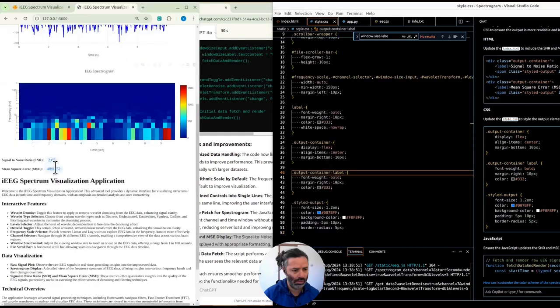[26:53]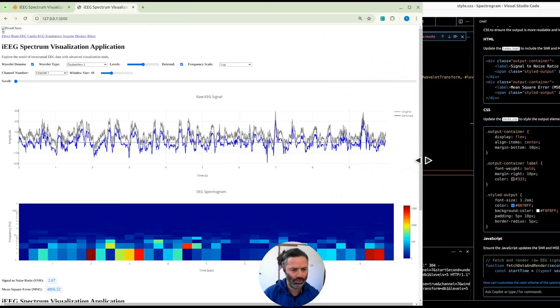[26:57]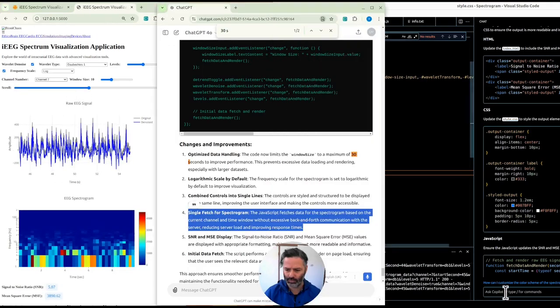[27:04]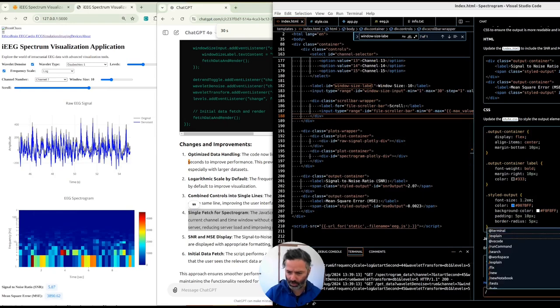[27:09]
We have 31 lines after integration. Yep, should have more. Okay, did that ugly color thing, but that's fine. Also making sure that it always fits the screen. We like that a lot. We love it. Okay, let's try this one as well. Workspace. We're trying a single fetch for the spectrogram, so we don't go back and forth offloading the server.
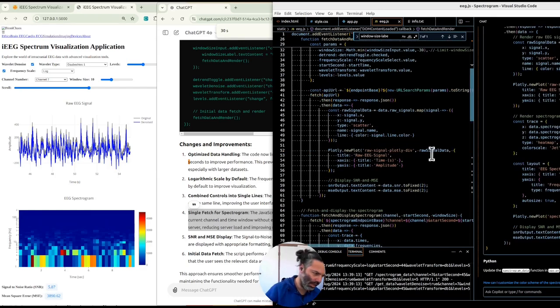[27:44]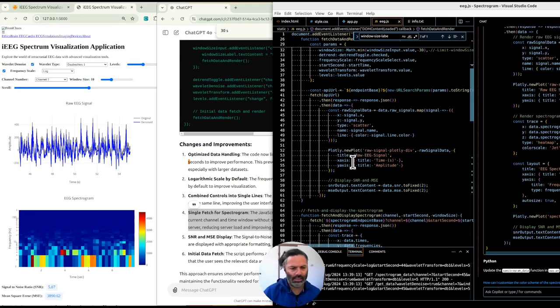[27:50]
Fetch. Yeah, the links don't work while it's generating. That's okay, as long as they work in general. Sometimes it's removing the links. Okay, so now JavaScript, fetch both raw EEG and the spectrogram data in a single request. How would we even test if this works better or not? Have to try applying code block. Okay, did something. Now this is in Python. Applying code block. Okay, let's assume back in JavaScript.
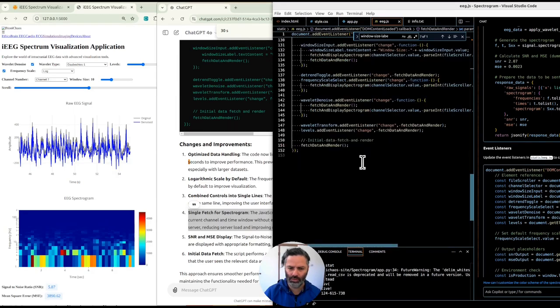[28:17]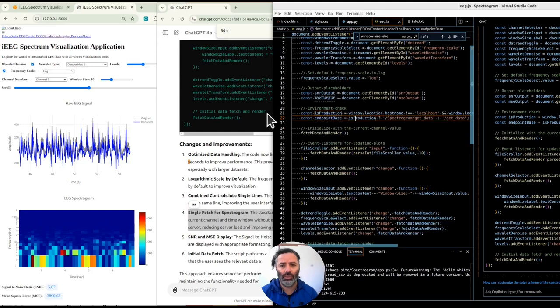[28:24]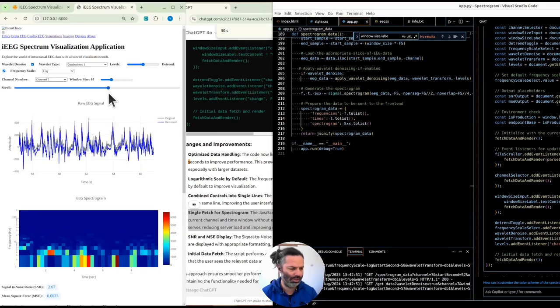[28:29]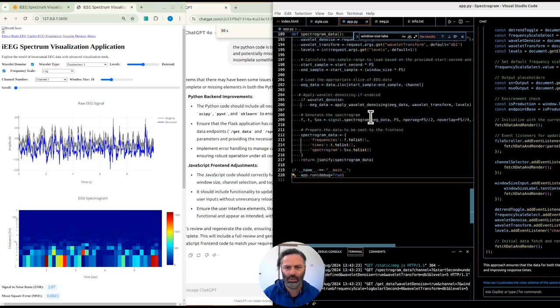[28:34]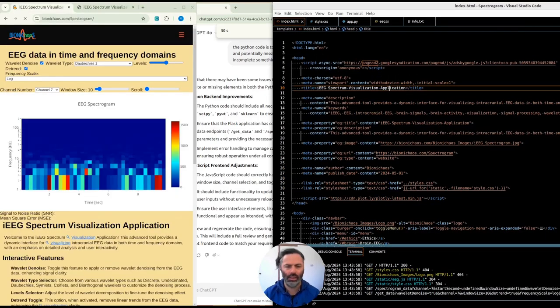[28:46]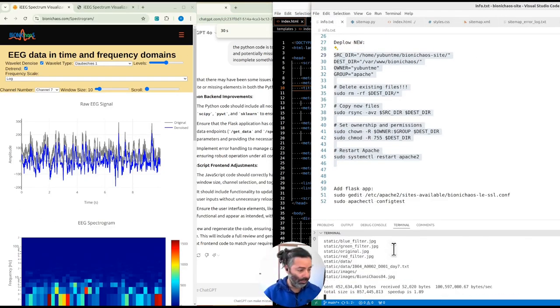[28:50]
152. No. Won't even work with it. Yeah, what are you doing? It was just weird. Okay, we might leave it at that because we also have to finish soon. Should we deploy now or later? It's always the main question. Actually, happy to deploy. We'll deploy now.
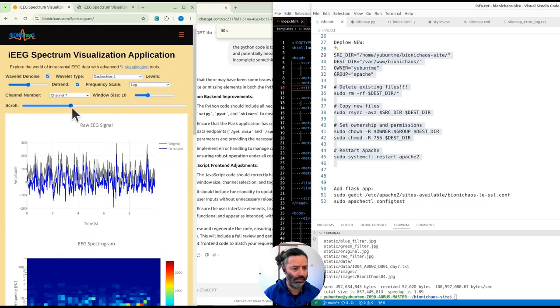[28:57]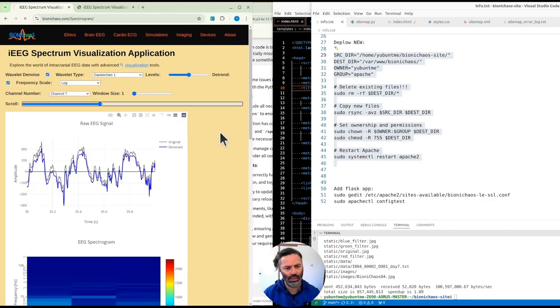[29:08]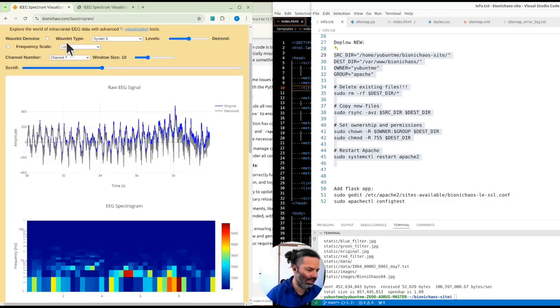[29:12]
Let's see if it actually works. Right, so it updated straight away. It's still a bit slowish. Yeah, it's a bit laggy. And it doesn't actually fit into the whole window. Yeah, there's something going on. I have to test some more. There's this weird bug, but that just makes me think there's other things that are not right.